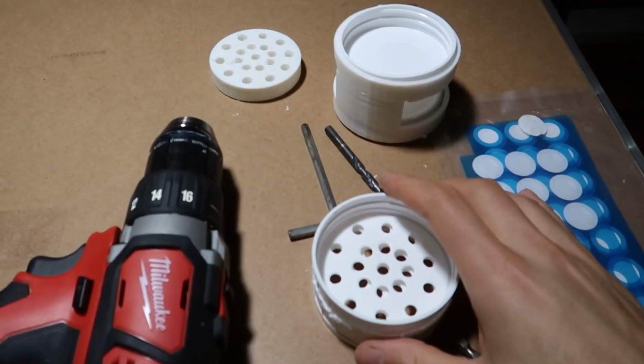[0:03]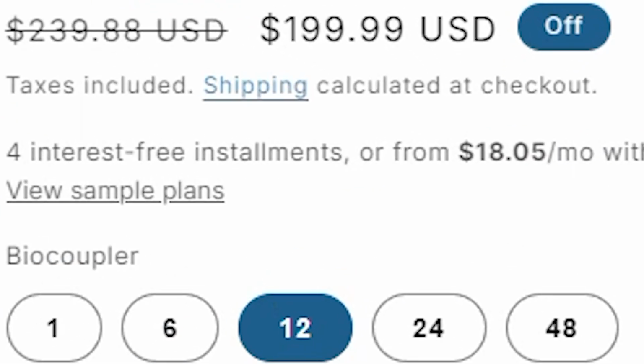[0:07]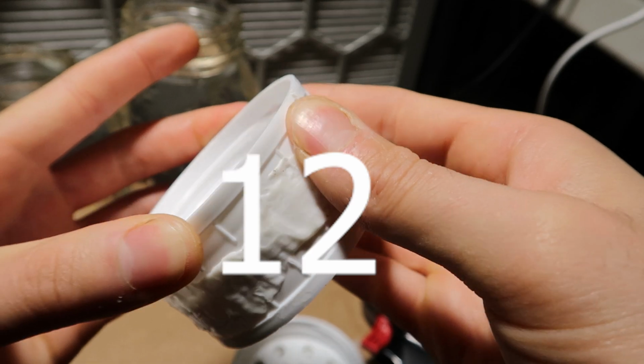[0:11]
For one of them, it's going to be $20, and for $200, you gotta be kidding. We're definitely making these. In fact, we're making 12 for under $100.
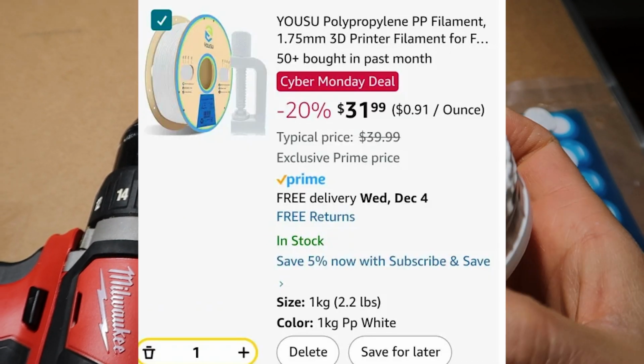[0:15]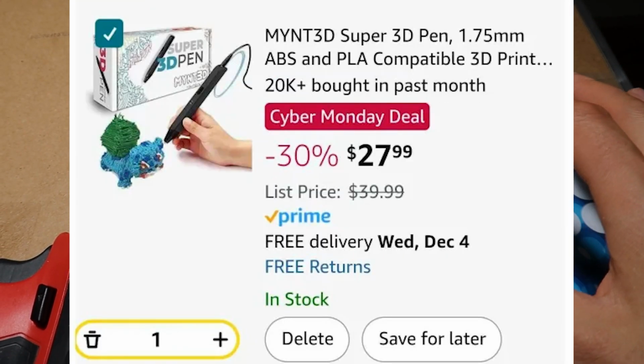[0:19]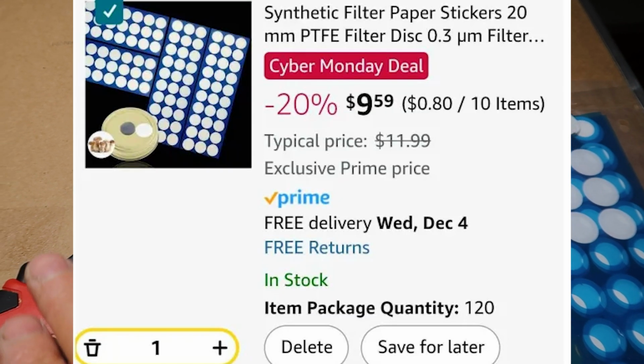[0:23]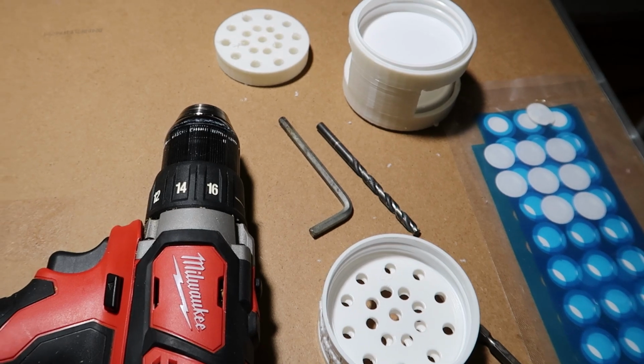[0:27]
You're going to need some lids and some 3D filament. Make sure it is the same plastic as your lids. A 3D pen, as well as some filter patches with an adhesive back. All that extra money you could throw towards yourself a drill.
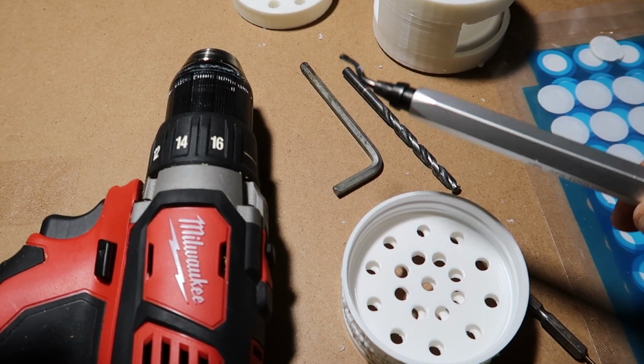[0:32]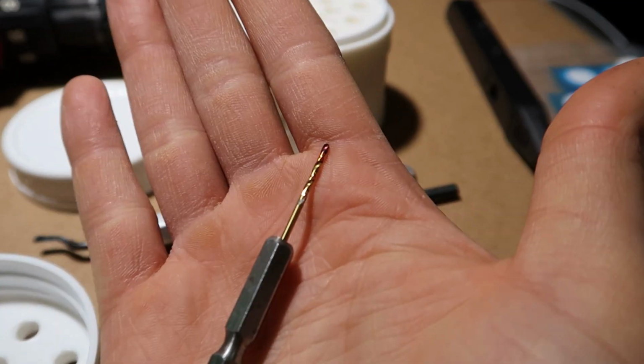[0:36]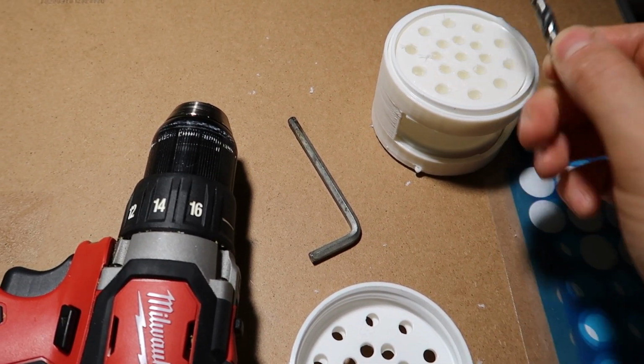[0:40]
Some other optional tools would be a burr remover tool. This helps clean the plastic up if you are drilling, a large drill bit, a small drill bit, and these 3D prints that I made. If you guys want them, join the Discord. I'll be sure to send them to you.
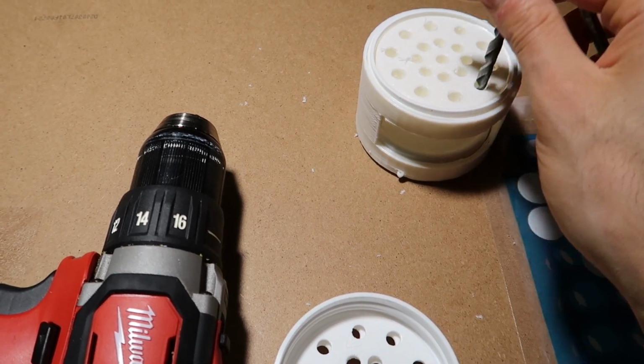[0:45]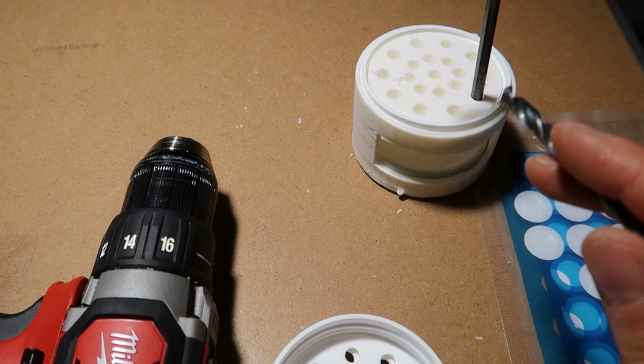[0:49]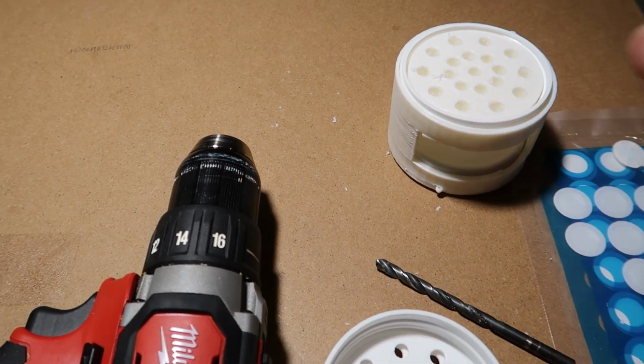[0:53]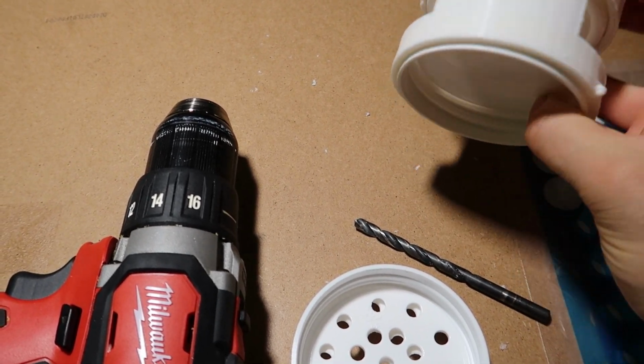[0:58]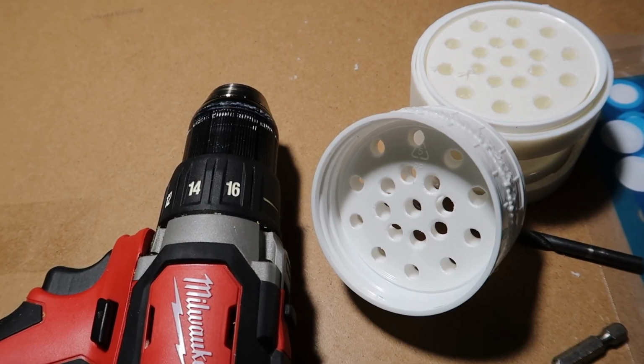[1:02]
You're gonna drill the holes in with this and then use something similar size for an indexing pin, so when you drill around it, you're not gonna lose where you marked. Take them out, clean them up, and then put them back in here, push them together, and then you're going to use the 3D pen to weld around the outside. So without further ado, let's make these.
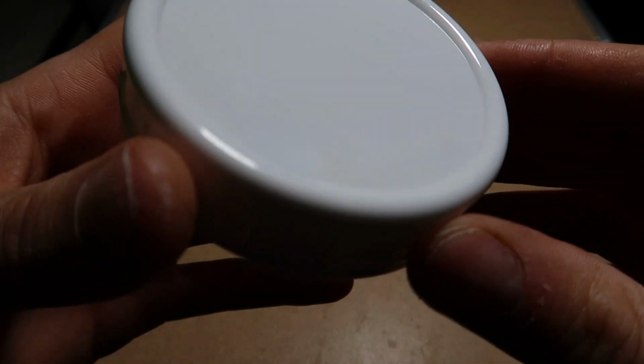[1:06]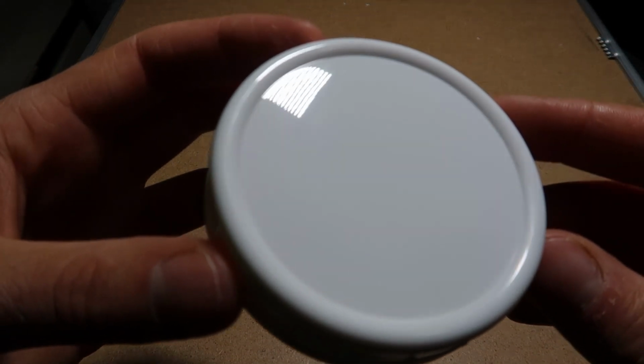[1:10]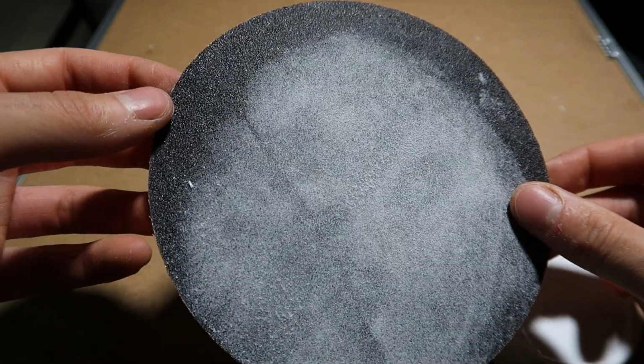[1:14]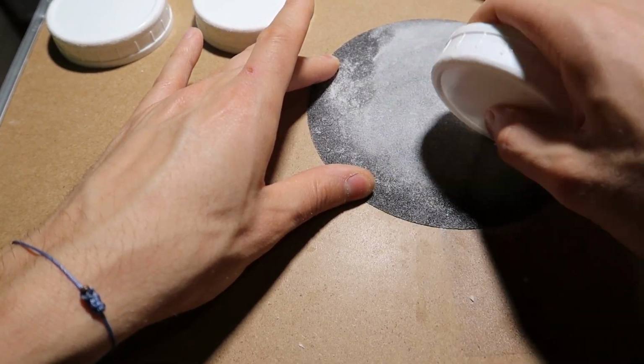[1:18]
This is what the lid looks like when it's unsanded. Very shiny, very shiny. Take your sandpaper. If you don't have any sandpaper and don't feel like picking some up, go outside and use some concrete. Go crazy. But instead, we're going to be using sandpaper because we're doing this indoors.
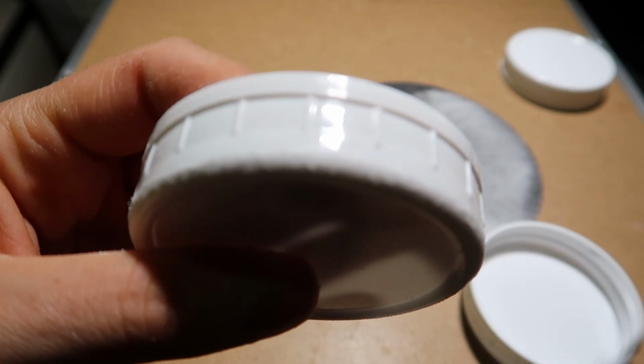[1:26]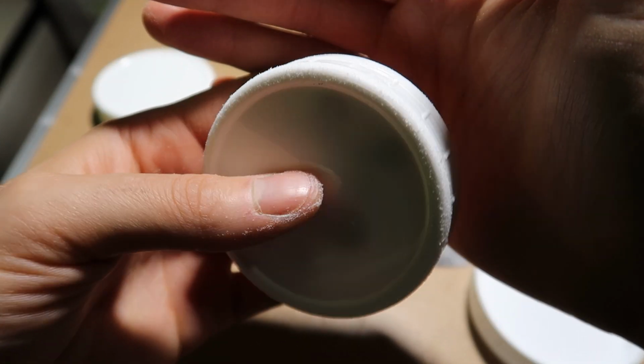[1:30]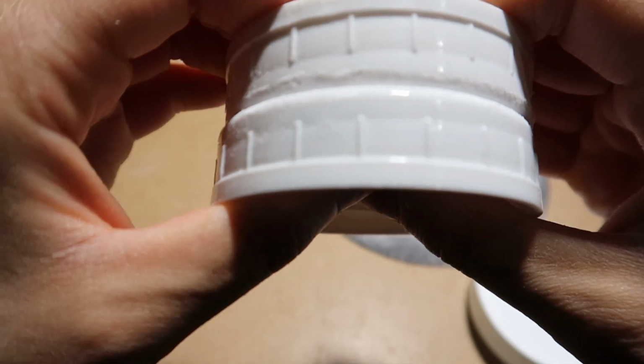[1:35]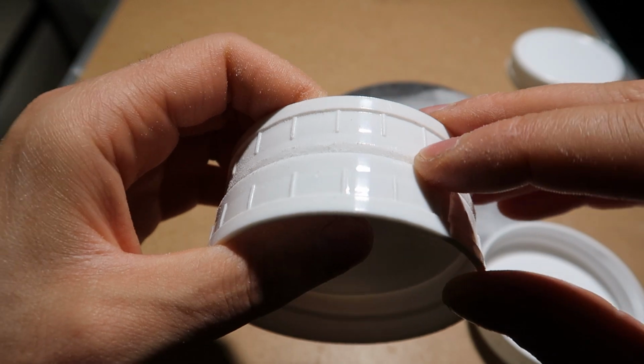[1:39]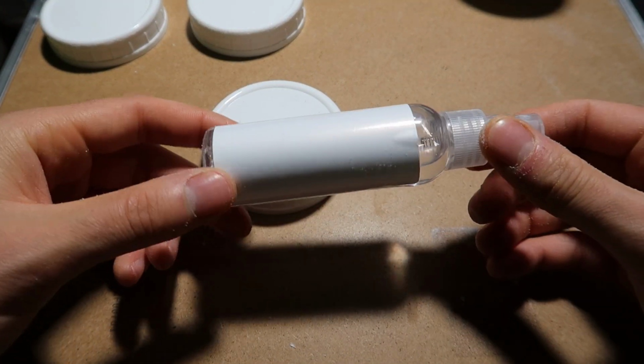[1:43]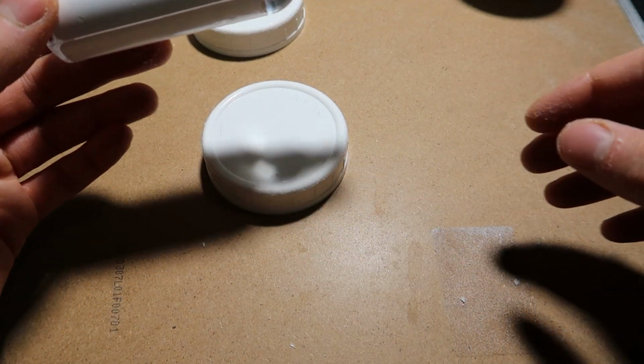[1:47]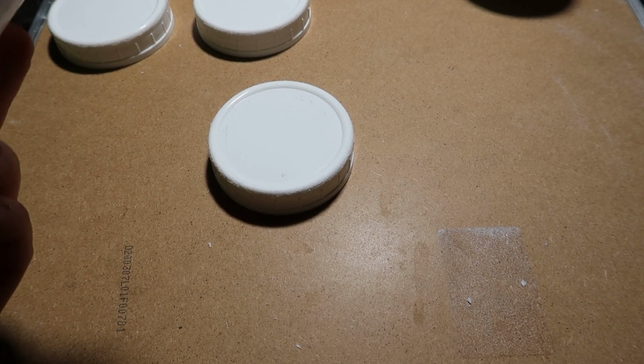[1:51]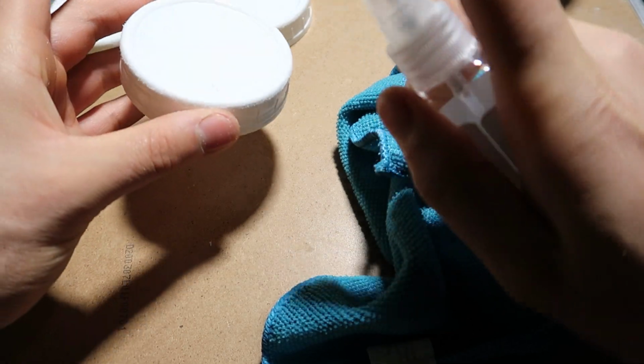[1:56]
So you're going to sand around the edges, and you're going to sand around the exterior rim to see how it's like a little bit higher than just the base. Make sure we got good adhesion between the plastic when we go through and weld it. But you don't want to leave them all dirty because this dust gets everywhere. Have your proper PPE and maybe a ventilation fan on. Suck out all the fumes and plastic. But we're just going to clean it up here with some little isopropyl alcohol and a microfiber cloth and just go ahead and wipe it down.
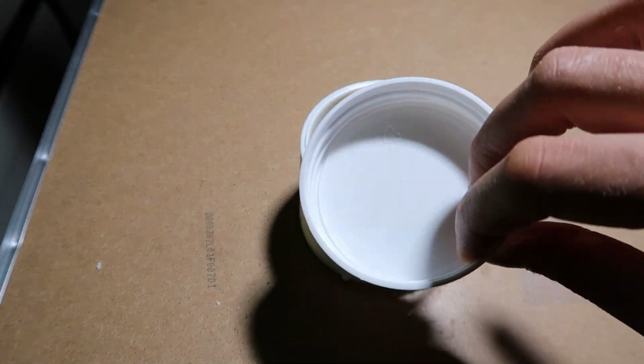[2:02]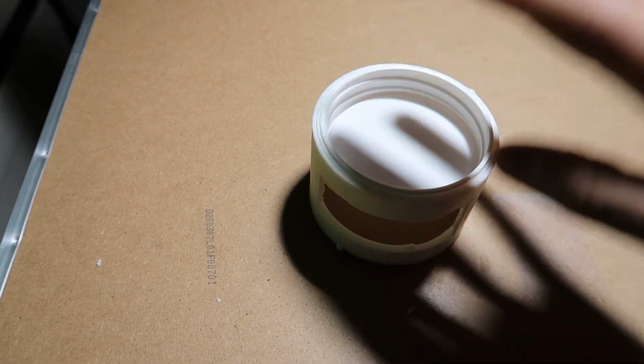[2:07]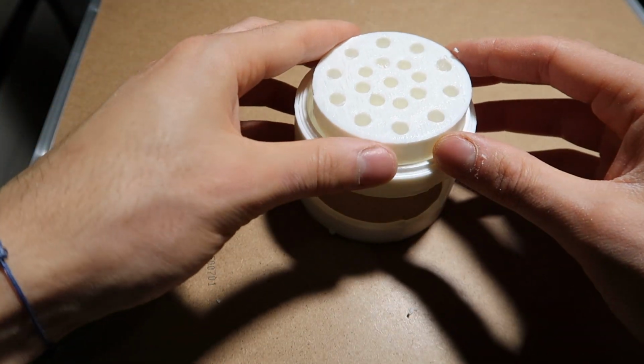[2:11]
Then we're going to put this in the print. This is just going to help me hold it while I drill it. Use a little insert and make sure it sits flat. And go ahead and start drilling.
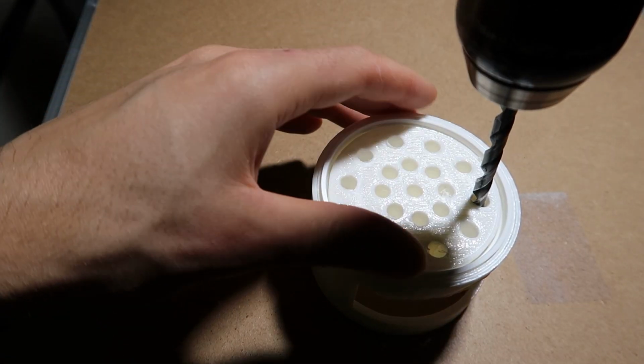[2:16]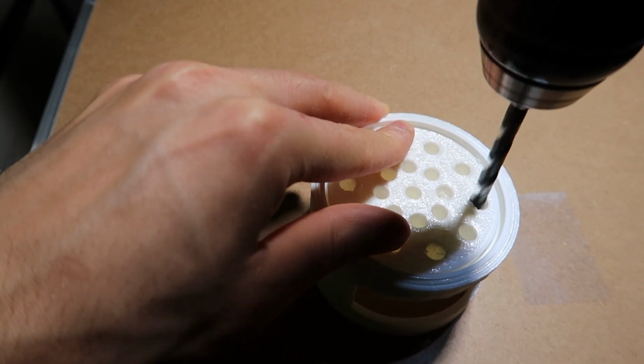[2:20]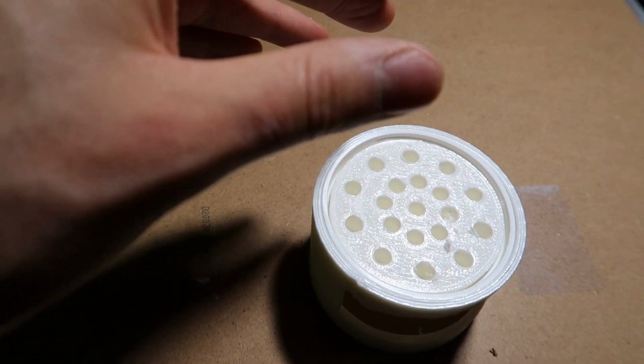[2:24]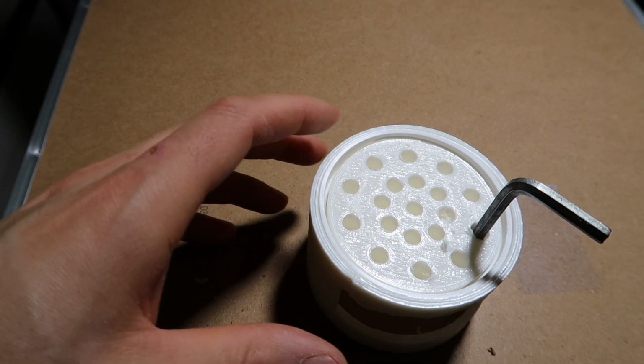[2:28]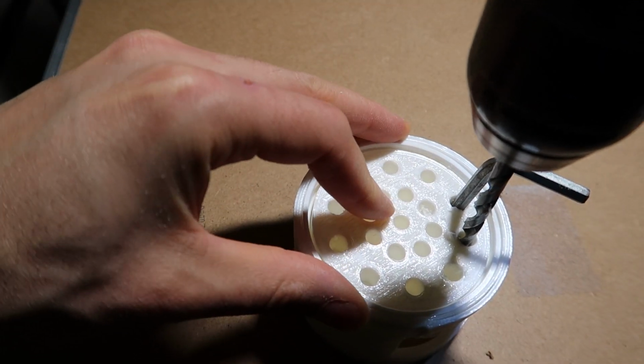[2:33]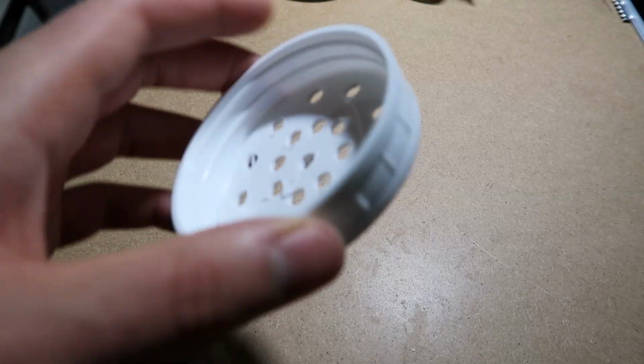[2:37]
I use a slightly duller drill bit because my new drill bit that I just got was far too sharp and gripped the soft plastic and tried to spin it in my hand, so I just went back to this one. Drill out the first one, then I'm gonna grab that indexing pin, slide it in, and this will ensure that the hole guide doesn't turn when you're trying to drill the additional holes. Make sure you're holding it safely and your fingers aren't under the workpiece because you will drill your hand.
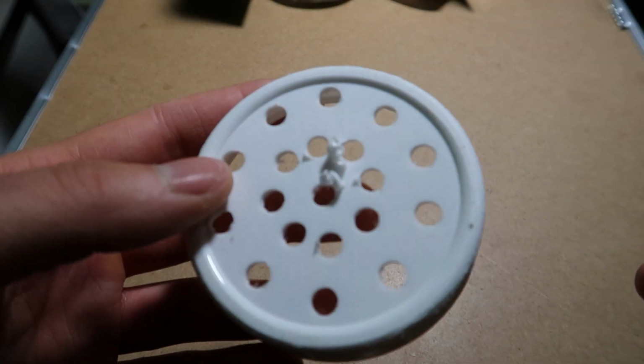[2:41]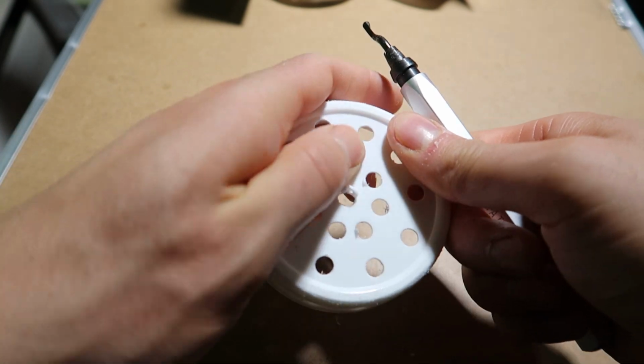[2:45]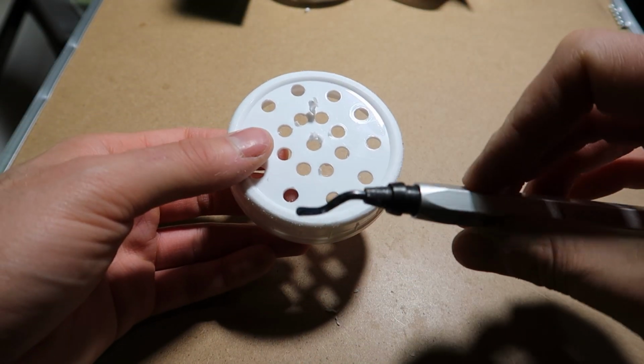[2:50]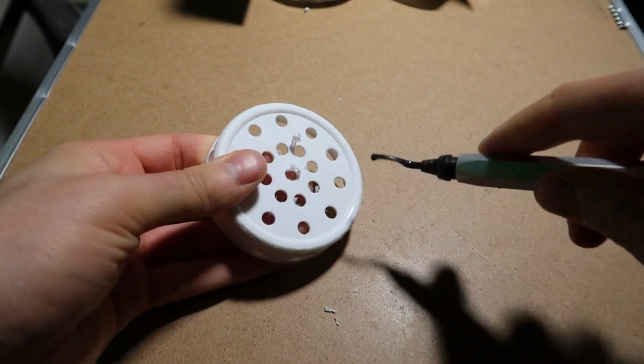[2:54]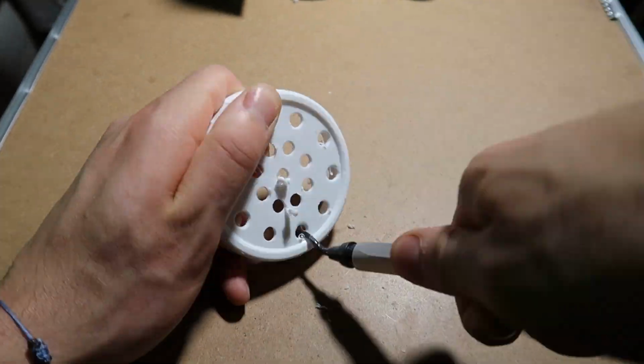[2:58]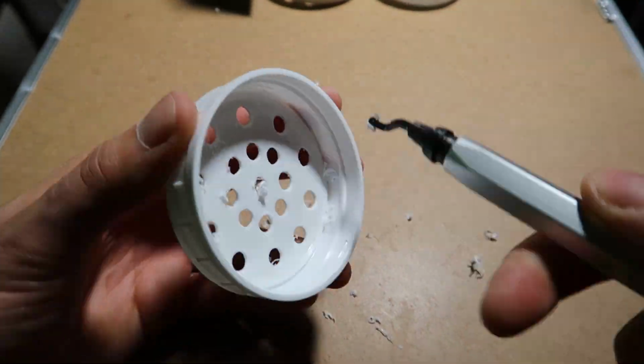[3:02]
It'll look like this when you're done. You got all these giant boogers on it, and they're kind of difficult to get off, and they break if you try and pull them like this. Not good. This is what you need. This is that deburring tool, and it just scrapes the plastic like butter. Go through all the holes. It's quite tedious, but turn on a podcast or some good music and listen to this amazing sound.
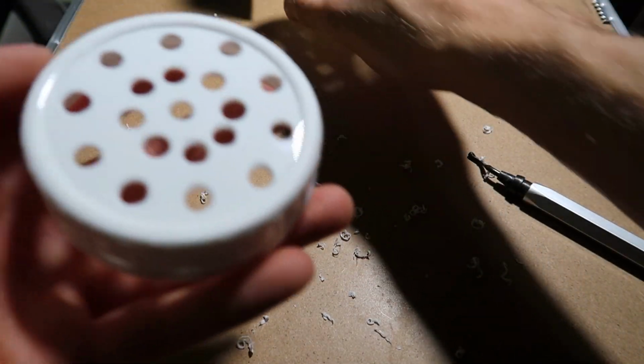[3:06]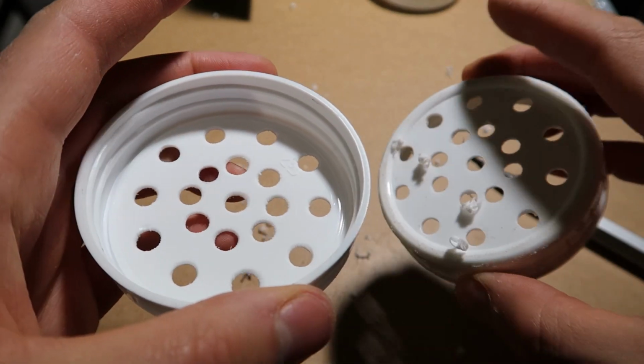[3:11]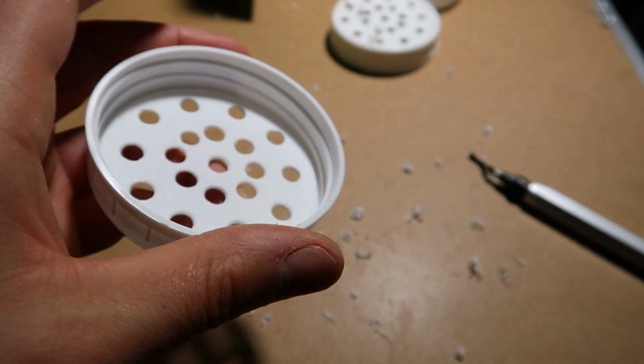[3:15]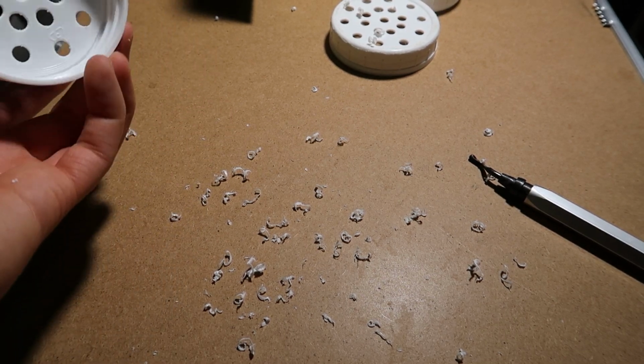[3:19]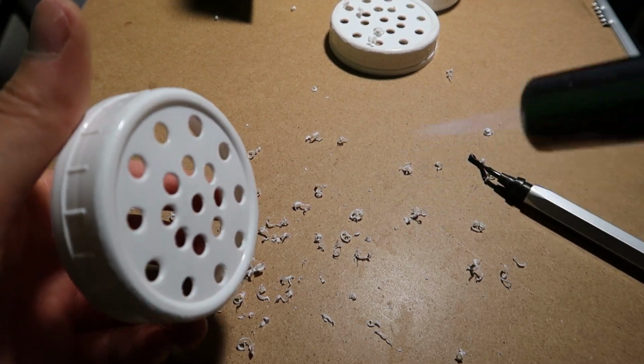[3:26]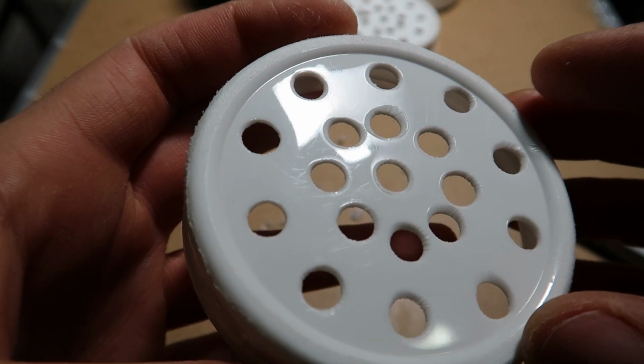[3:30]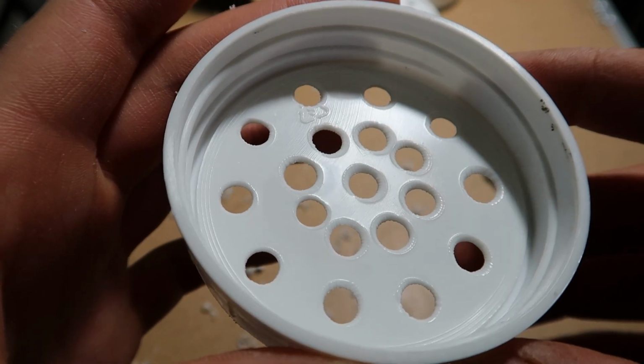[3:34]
Then once that's done, it'll look like this. This is the before and after, and this is where a lighter or a blowtorch will come in handy. Light heat, just to singe up some of those loose hairs. Obviously, being careful that you don't burn yourself, and if you do end up using a lighter, it may leave some soot behind, so it's going to be an extra task to then clean that up. So that's why I like using the torch. This is what it looks like when it's all completed on both sides, very clean.
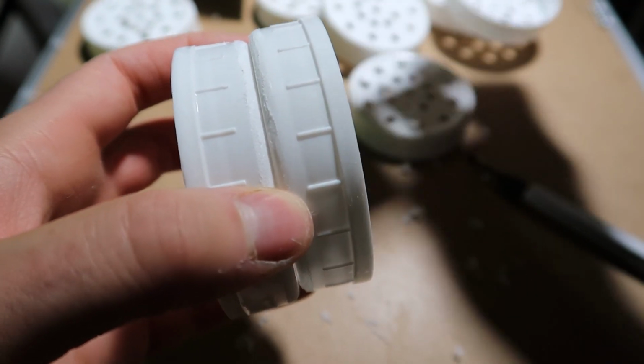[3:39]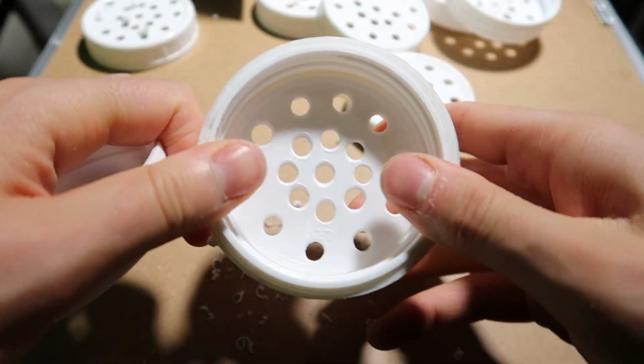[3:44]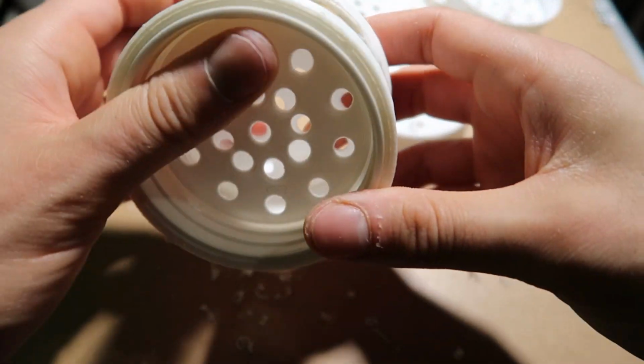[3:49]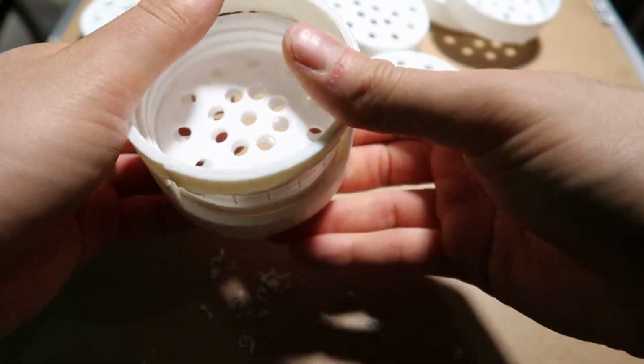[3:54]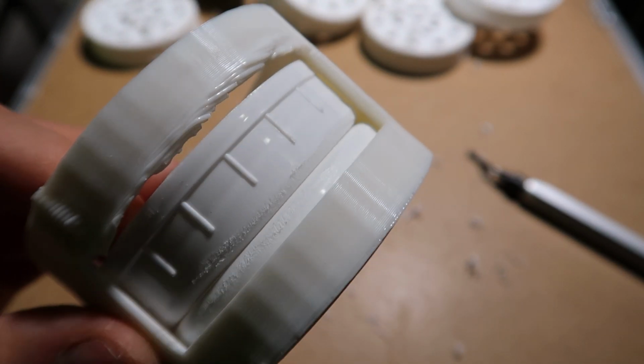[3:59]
Then you could either tape it like I'm holding this now, or if you have a 3D printer, print out the jig, slide one cap in one side and then the other cap in the other. If you angle it on one of the sides, I found that it was a little bit easier to slide it in through the top rather than pushing it flat through the top. But this is what it should look like at this stage. Slightly rough on the exterior for good adhesion. And if your floor looks like this, then you know that you did everything right and you're ready to move on to the next step, which is the 3D pen.
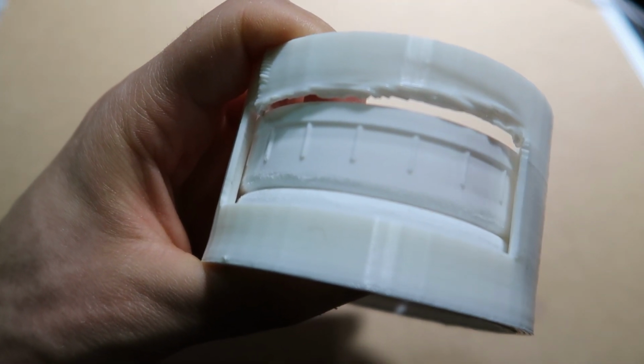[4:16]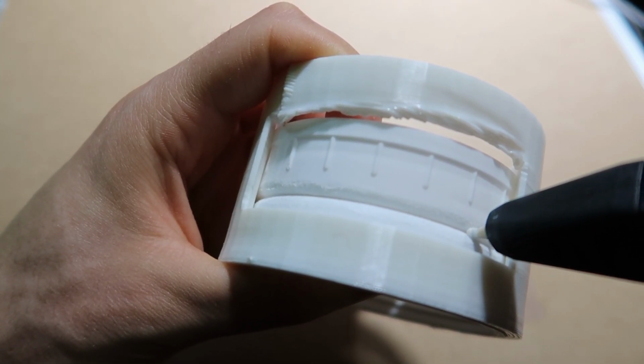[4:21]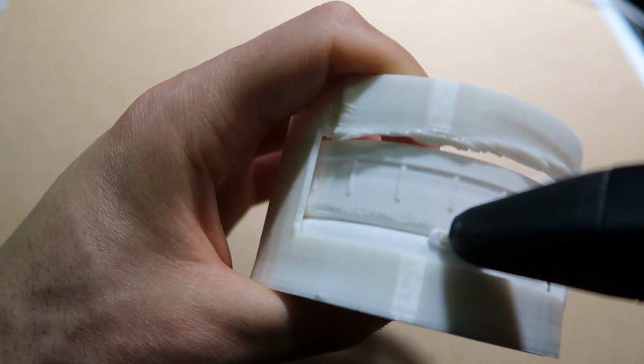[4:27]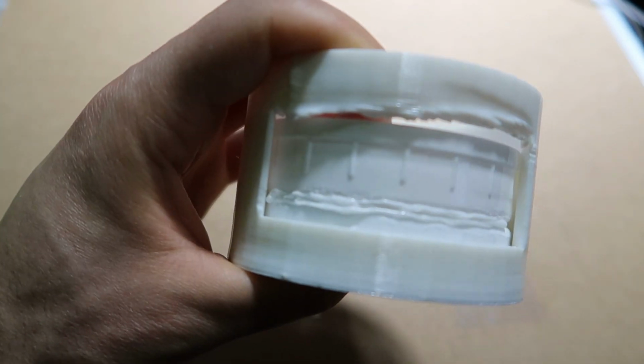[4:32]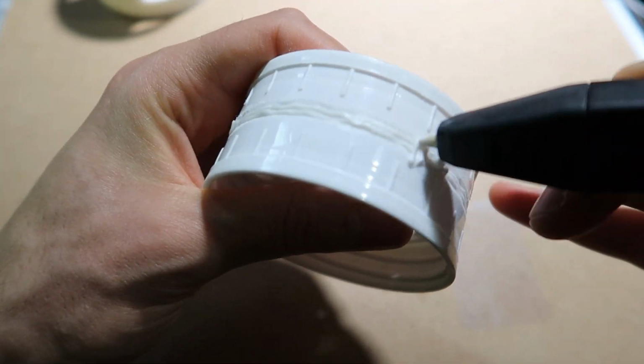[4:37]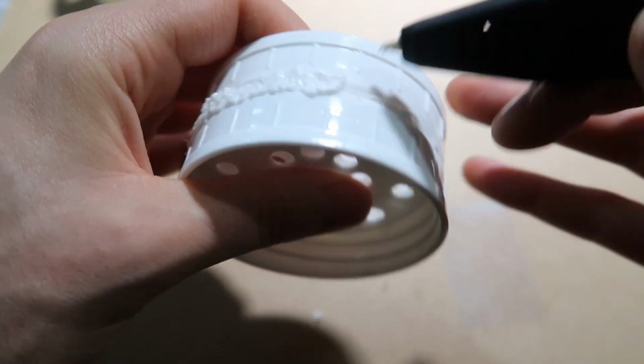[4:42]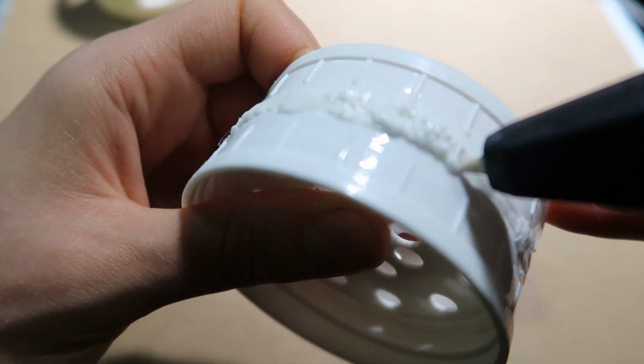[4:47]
Hold your workpiece in one hand and then take your 3D pen and start to extrude the filament into the gap between the two caps. You're gonna do both sides, or if you are taping it, you could tape it in a cross formation and then hit four sides and then untape it or take it out of the mold and then fill in the gaps that you haven't touched. Once that's completed, you're going to add some additional plastic over that center seam. This will further join the two caps together and allow us some excess plastic to shape and mold flush so that the filter patch will stick.
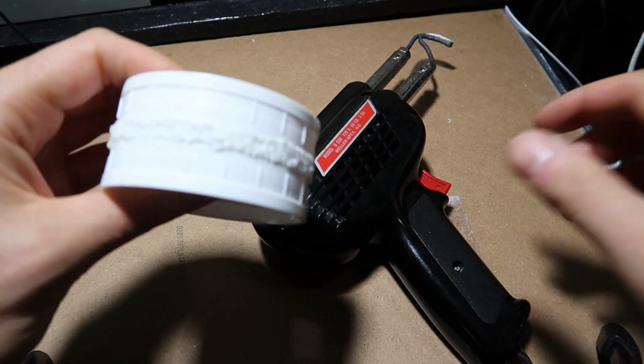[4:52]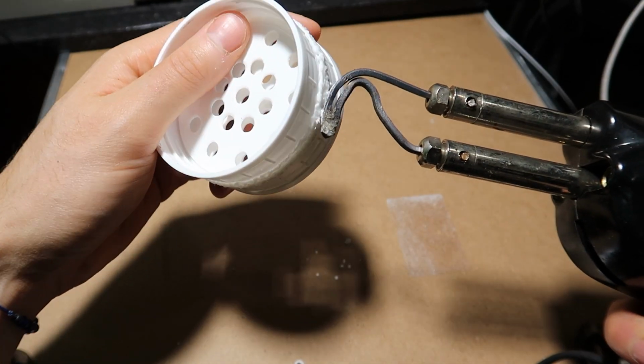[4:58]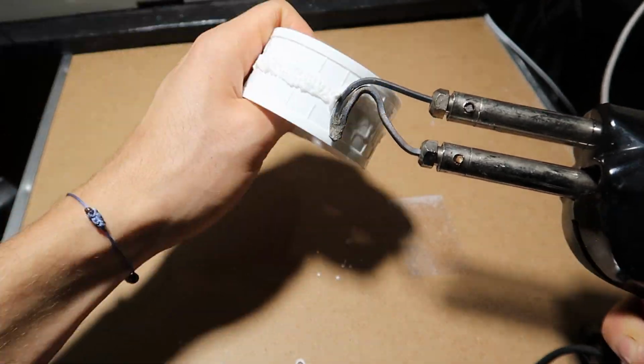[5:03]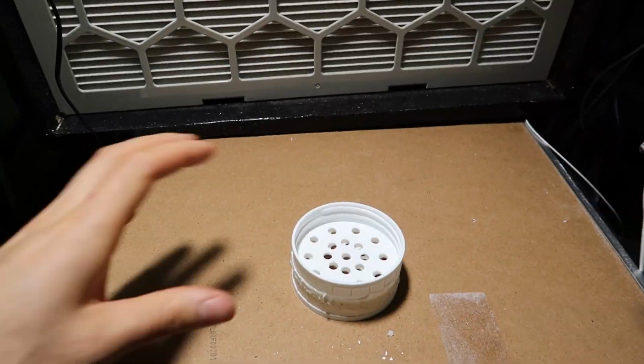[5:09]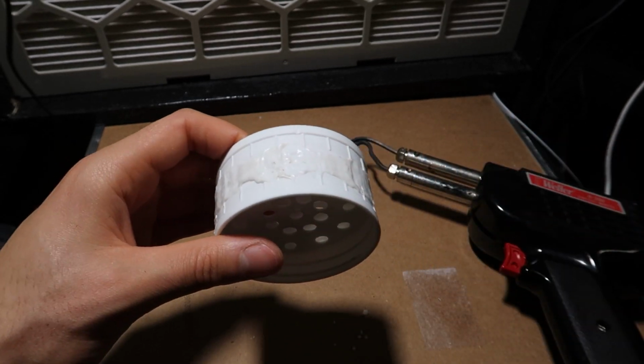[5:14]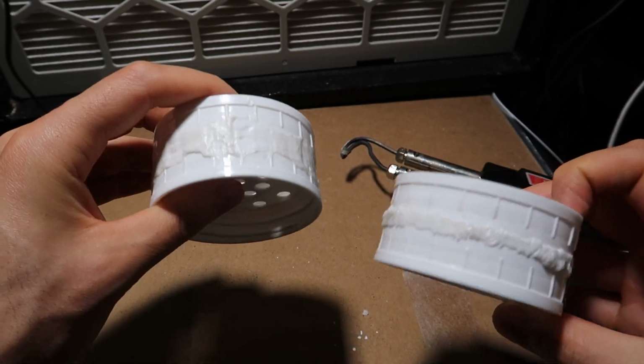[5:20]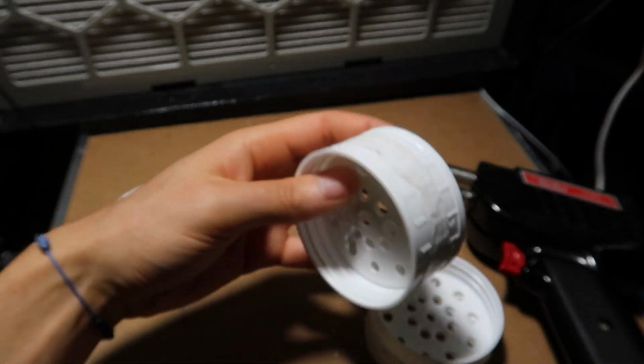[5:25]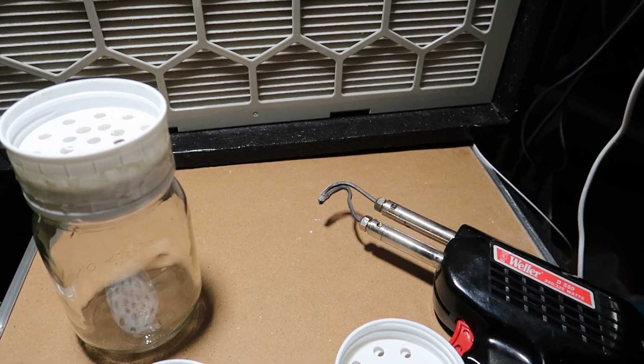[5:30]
I'm going to be using this iron. You could also sand it, but this iron allows us to mold it into a continuous seam. Make sure you have some sort of PPE. These fumes are not great to breathe in. I have a fume hood with an extraction filter on it. This will ensure the air stays clean and my lungs stay plastic free. This is the before and after. You could sand it down if you don't like the surface finish to make it look completely even, but this is fine. The filter patch will have no problem sticking to it.
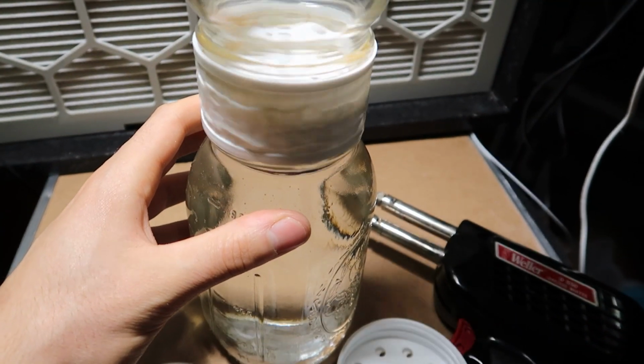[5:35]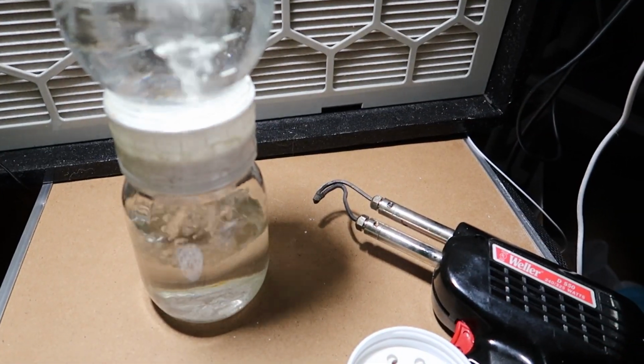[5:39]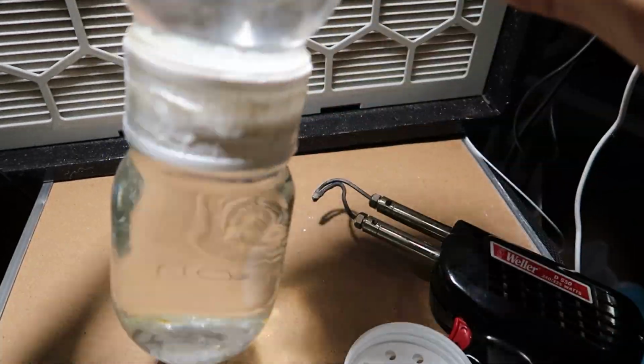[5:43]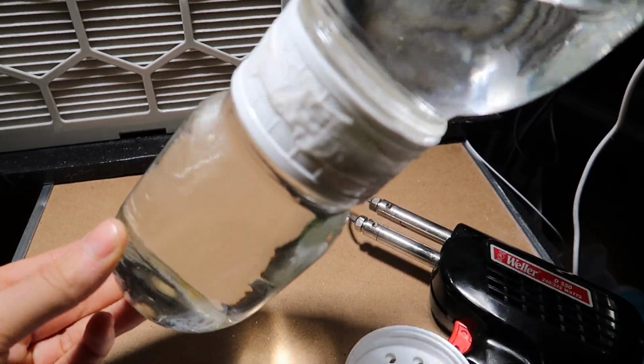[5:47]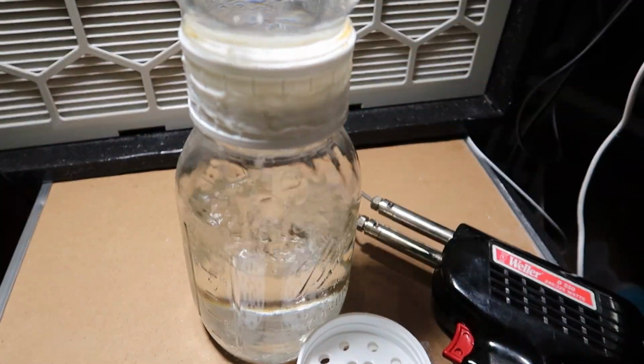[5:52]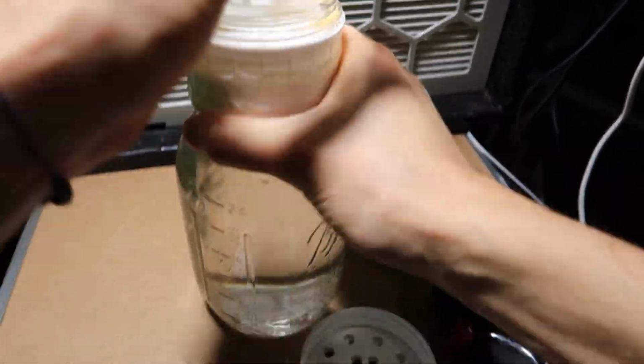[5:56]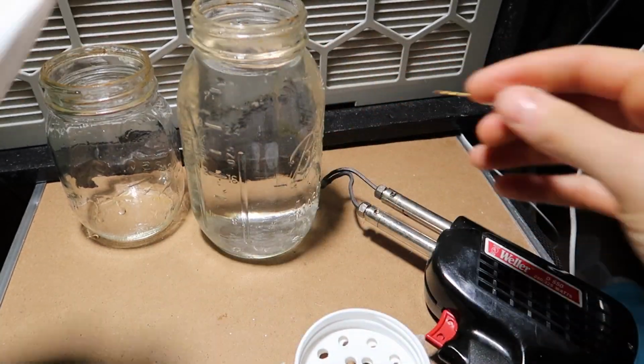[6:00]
So now we're going to leak test it. I grab a larger mason jar, fill it up with water, and then tilt it onto the smaller jar. This way it fills it up and then even flows beyond the top of it. Make sure there's no leaks. And this looks great. There's no other air bubbles coming up, and then we're just gonna pour the additional water back into the larger mason jar so then we can get on to drilling it.
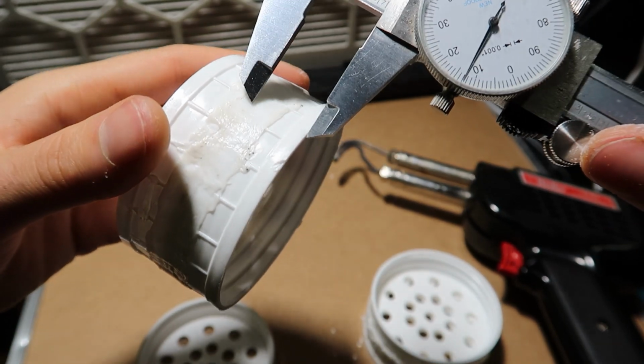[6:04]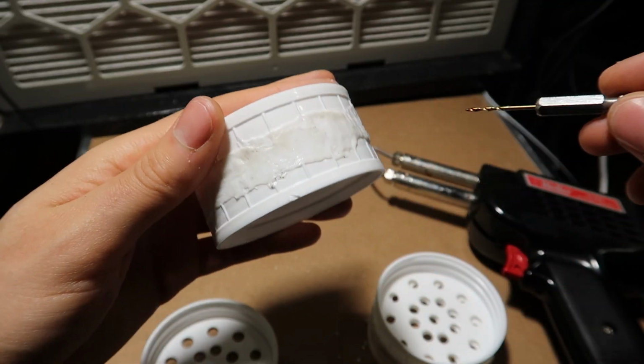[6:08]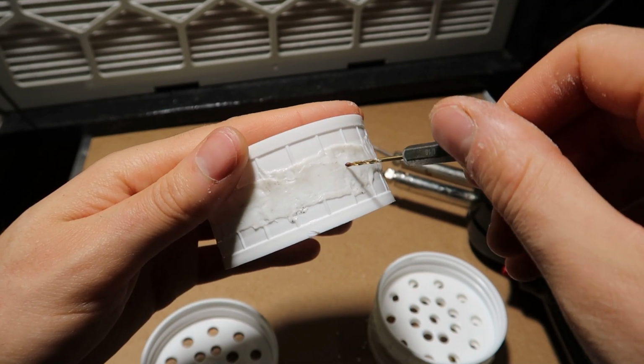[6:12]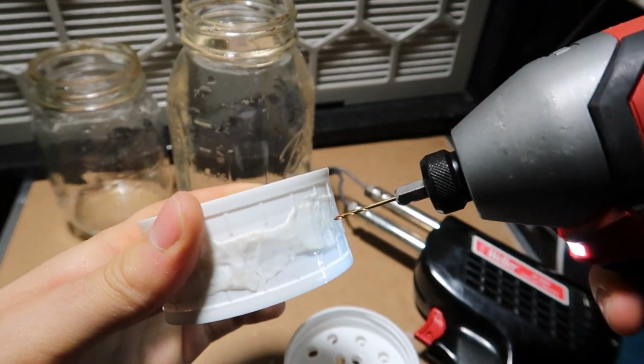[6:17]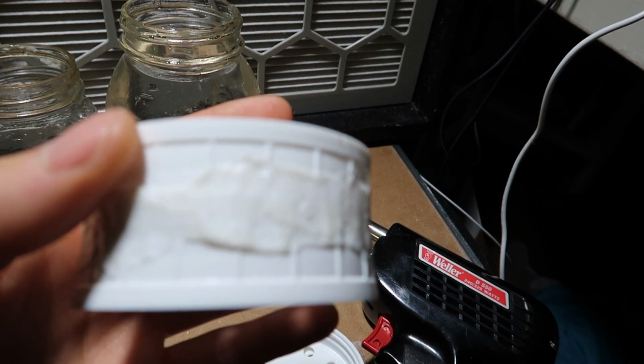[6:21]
And grab our dial caliper, measure just a singular lid, and then mark the center. We're grab our drill or a center punch and just mark where we want to drill. Then we're gonna grab our drill and drill it out. Grab our filter patch, slap it on.